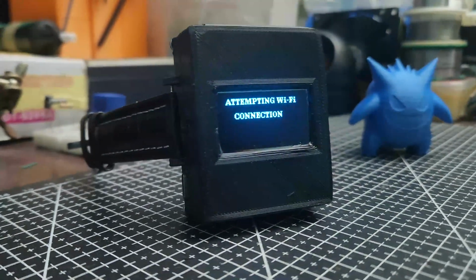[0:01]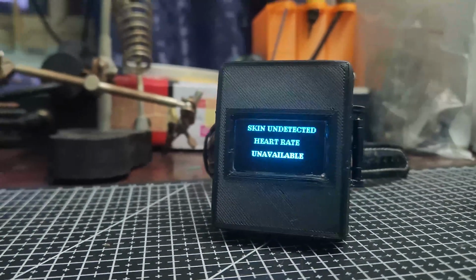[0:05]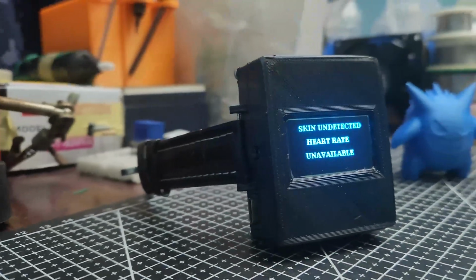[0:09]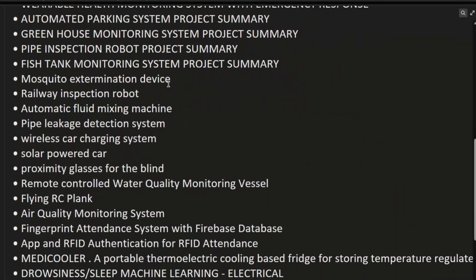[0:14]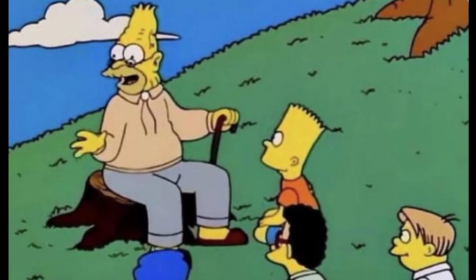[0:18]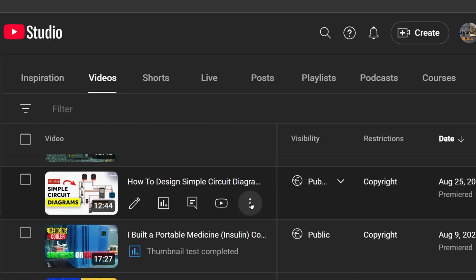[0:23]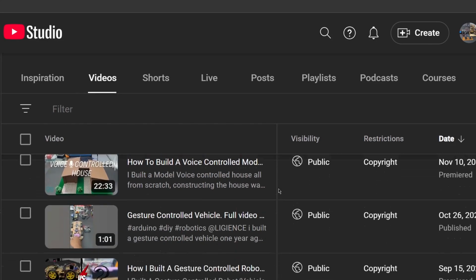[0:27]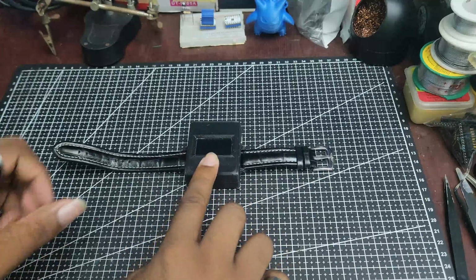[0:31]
Welcome to my new series, One Day Builds, or DIY One Day Builds, where I go over simple projects you can do with a little bit of effort and time. On a regular basis, I build a lot of stuff I normally would overlook making videos about. Why, you may ask? Because I never felt like a video on these simple projects would make good long-form videos or garner any attention. And that's mostly because I thought so, and I wanted to output much higher quality robotics videos too. Don't worry, I'm making a lot of those robot videos and you'll be seeing them real soon.
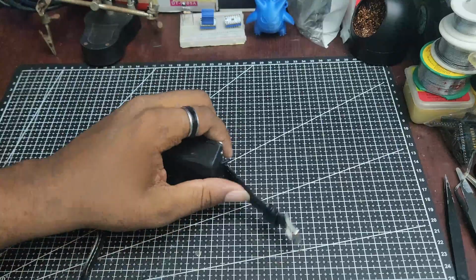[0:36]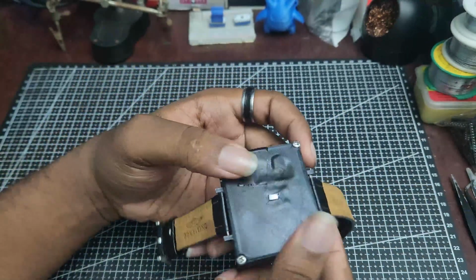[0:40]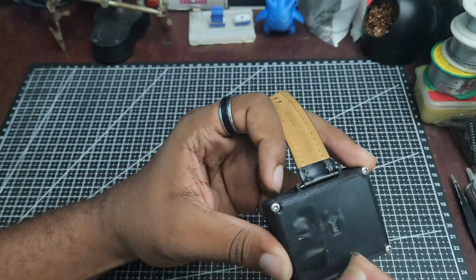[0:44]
But that's a dilemma, because as a 500 subscriber count channel, thank you to all my 554 subscribers as of the recording of this video. All the project costs are fully funded by me, your friendly neighborhood, temporarily broke engineer.
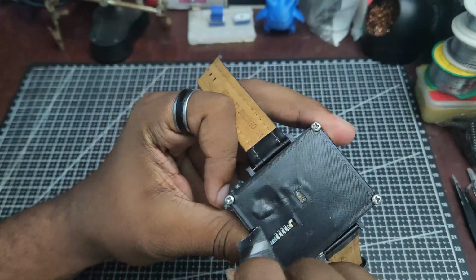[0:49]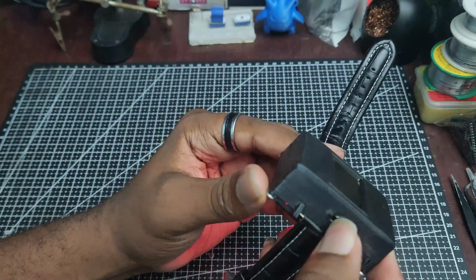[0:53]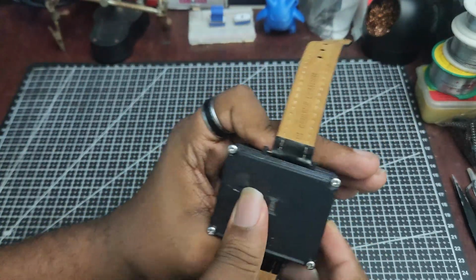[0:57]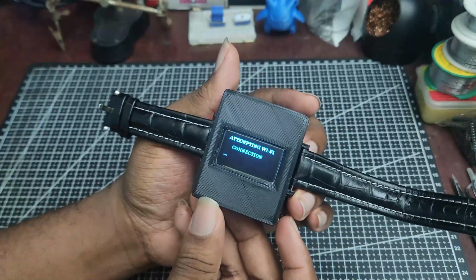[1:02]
All in all, I decided to start this series where I make simple videos on simple projects which can act as a guide for you, the viewer, to achieve, and they most times should be relatively easy projects if they fall under this series. Without further ado, let's get into it.
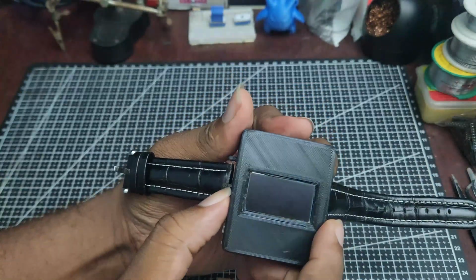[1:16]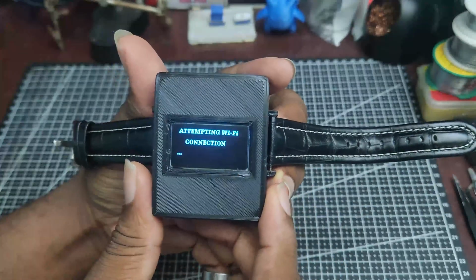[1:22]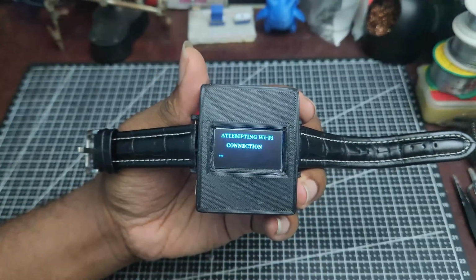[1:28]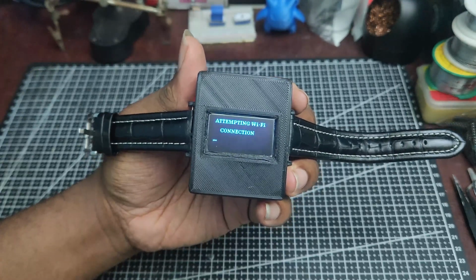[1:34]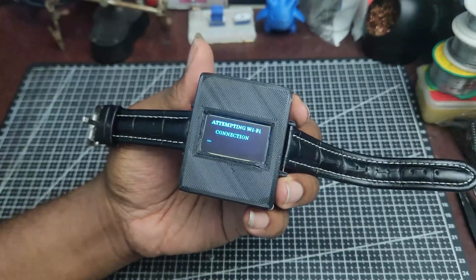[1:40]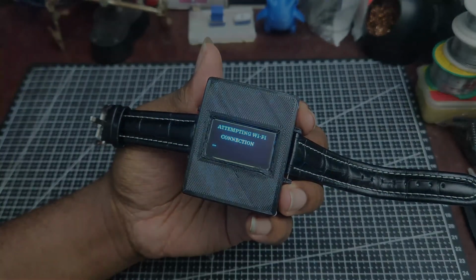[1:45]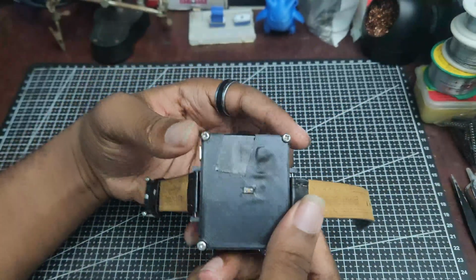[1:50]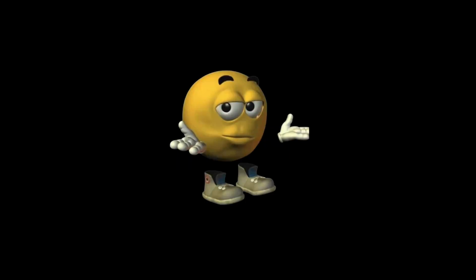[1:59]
Alright, so enough of my yapping. This is a simple heart rate watch, which, like the name implies, it monitors your heart rate. Yeah, that's all it does. I know you probably expected more, but that's it. So, how did I get here?
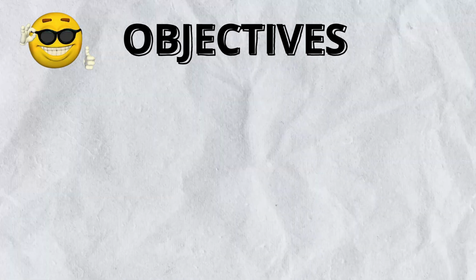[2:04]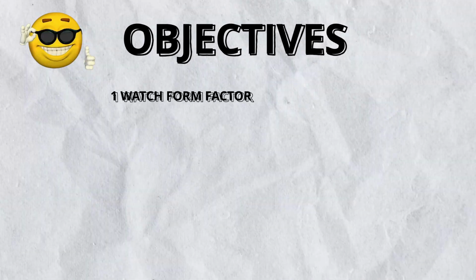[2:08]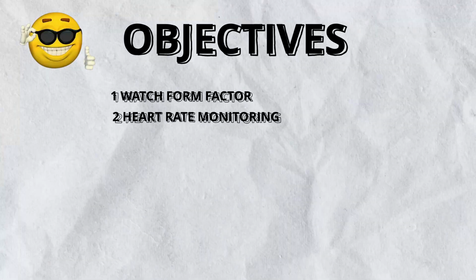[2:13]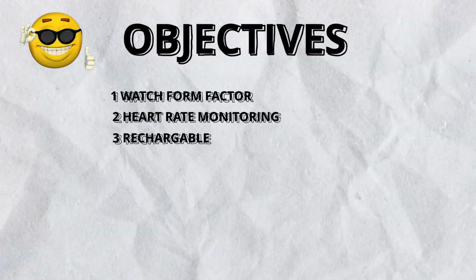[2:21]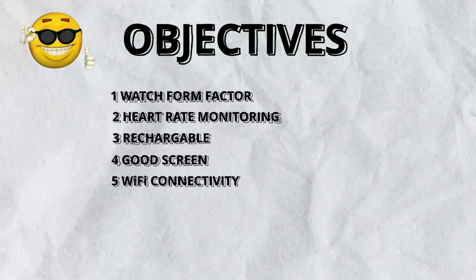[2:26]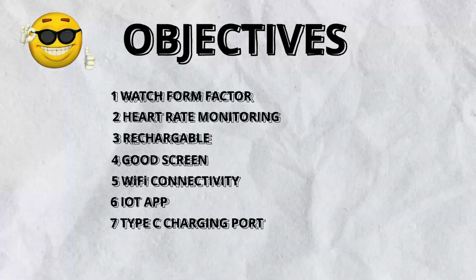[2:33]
First things first, just like any project, I define the objectives. You must be able to do or have the following. One, be in a watch form factor, so more like a watch and less like a bulky pile of wires. Two, it's got to be able to monitor heart rate, as of course it wouldn't be medical grade data or readings, but you know, just an actual data set. Three, it must be rechargeable. Four, it needs to have a nice screen. Five, it needs to have Wi-Fi connectivity capabilities. Six, it needs to be able to connect to an IoT app where one can see the heart rate readings. And seven, it needs a Type-C charging port.
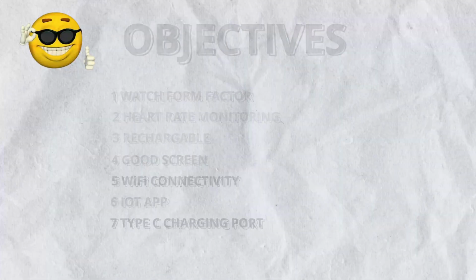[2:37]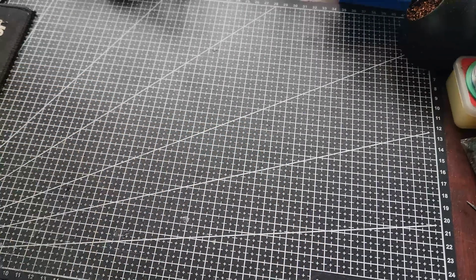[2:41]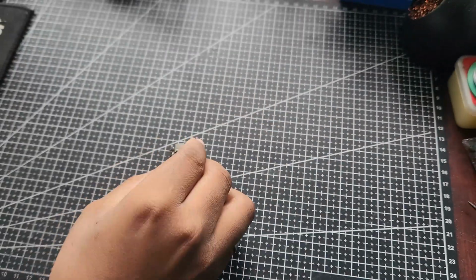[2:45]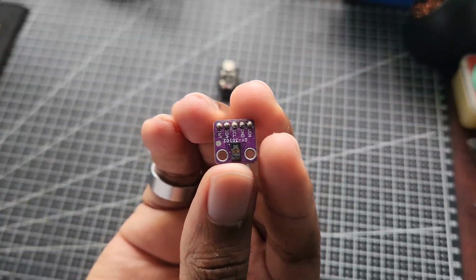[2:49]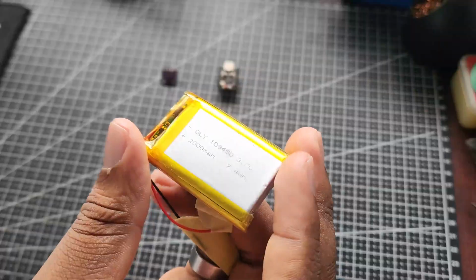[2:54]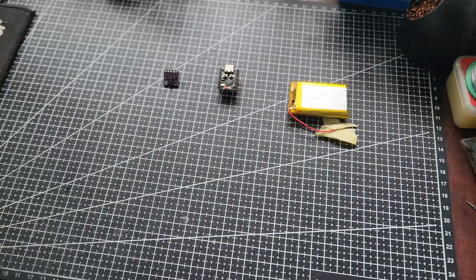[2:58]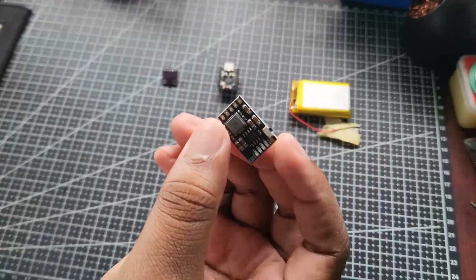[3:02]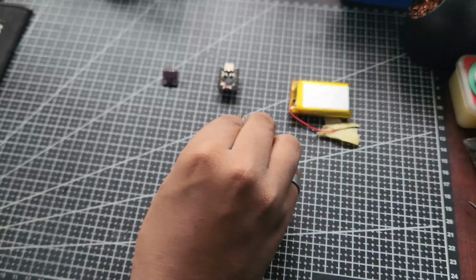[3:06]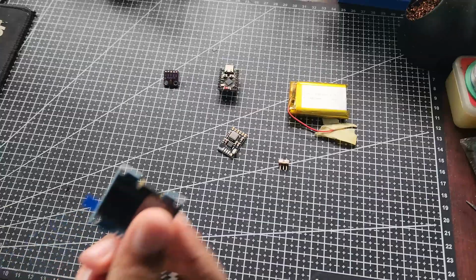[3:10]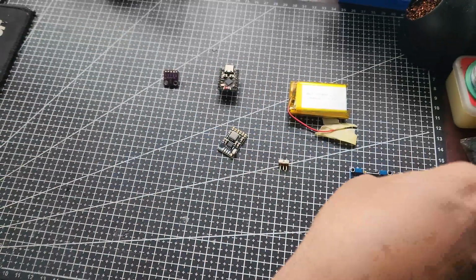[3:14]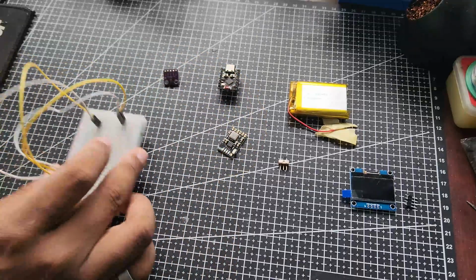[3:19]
So quite simple. With all of these selected, it was pretty easy to settle on the components I needed, which were an ESP32-C3 Super Mini, which, like the name says, it's super compact and useful for projects like this because it has Wi-Fi on board. The MAX30102 heart rate sensor, a small LiPo battery. I would have gotten a smaller one, but none were locally available. A LiPo battery charge and discharge module, which makes it really easy to charge the battery and also have load sharing, so it allows you to use the system and also have the battery being charged at the same time. It also gives 5V output, so that's pretty good. A small switch and a 1.3-inch OLED display. Oh yeah, before I forget, the breadboard with some jump wires just for running tests.
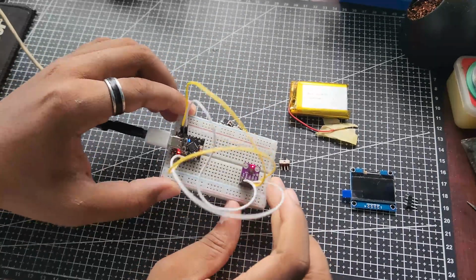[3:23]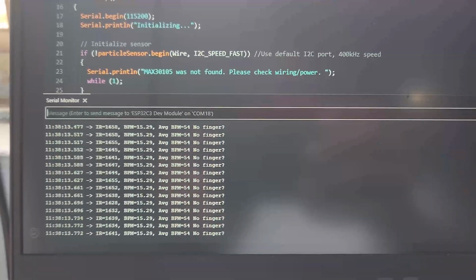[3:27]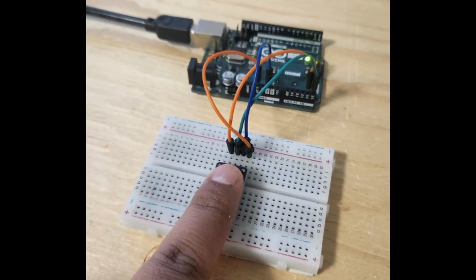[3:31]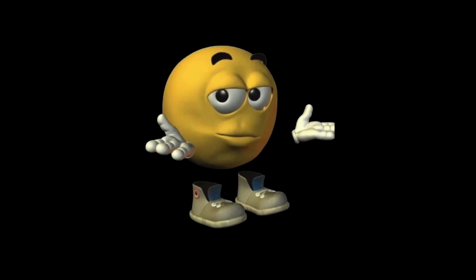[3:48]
First things first, I set out with the sample code and heart rate sensor to confirm I could get the appropriate data and readings when using the sample code. But let me make this clear, the MAX30102 heart rate sensor needs firm pressure on the skin and usually will be placed on the fingertip for minimal skin depth, which allows ease of penetration for good data. But we are going to use it on the wrist, and I know that's not where it's supposed to be used, but hear me out, you know. Simple project, you can ignore the complicated stuff.
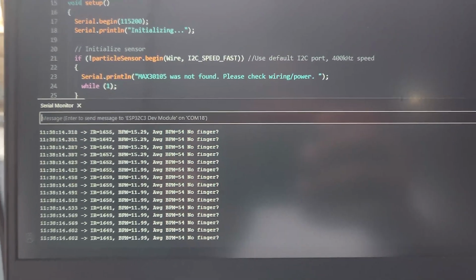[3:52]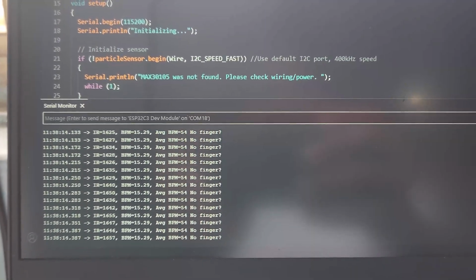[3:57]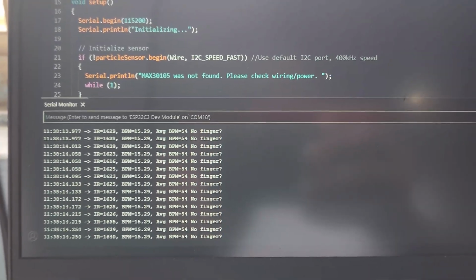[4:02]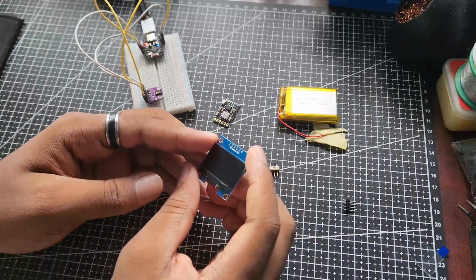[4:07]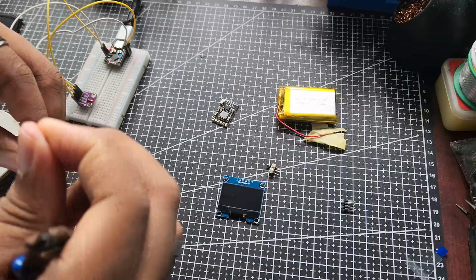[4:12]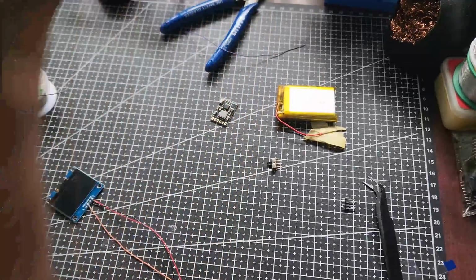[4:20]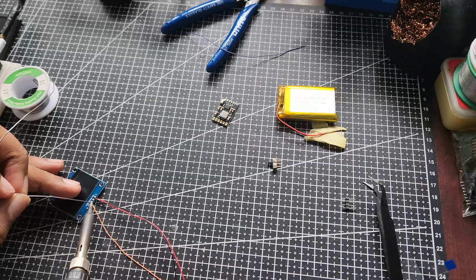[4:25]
The code and module work just fine, as you can see on my screen's monitor, where on the Arduino IDE I have readings from the serial monitor for the average BPM as it's being printed. But here comes the biggest problem of all, compactness. The build needs to be extremely small, so I made sure to solder these small 22 AWG wires to the screen and run the test connections on the breadboard. I do this instead of using headers that would occupy more space, and that's because they will get in the way when I'm trying to squeeze in everything for the final build. I also maintained this method of thinking throughout the project to make sure it was as small as possible.
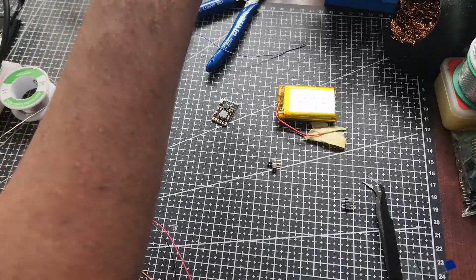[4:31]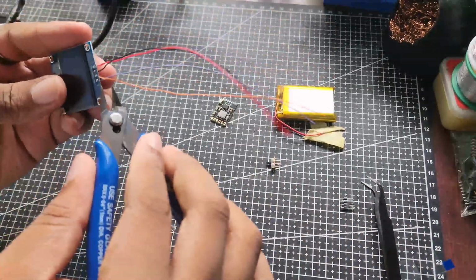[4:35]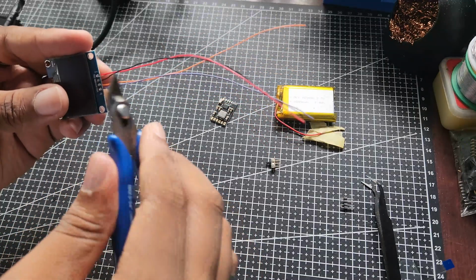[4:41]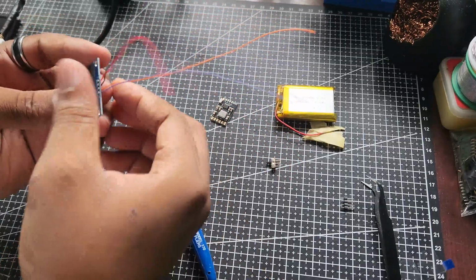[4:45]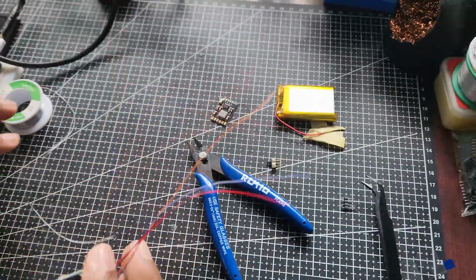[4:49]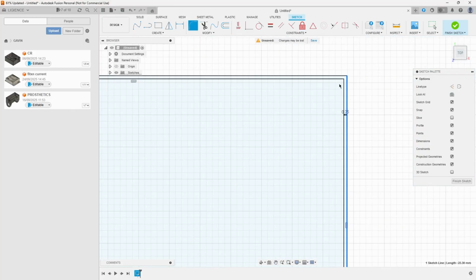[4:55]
After soldering and snipping off some excess wires, the screen was ready. Now here's the thing, instead of spending my time trying to perfect the electronics and making all the connections along with programming everything, I decided to take a different approach and make the watch case first. So I set up Fusion 360 and dived into 3D modeling. My reason for doing this was so that I could print the body of the watch first.
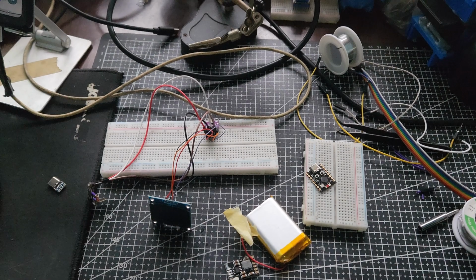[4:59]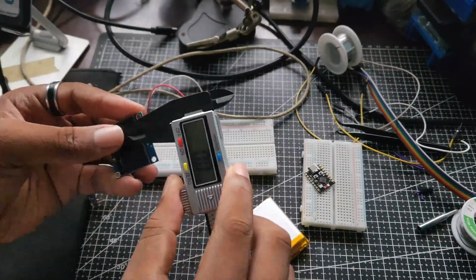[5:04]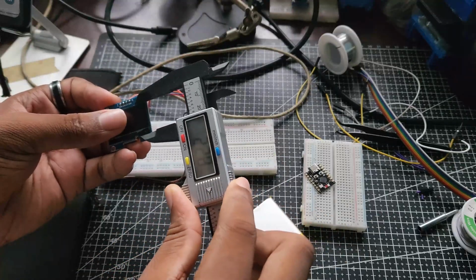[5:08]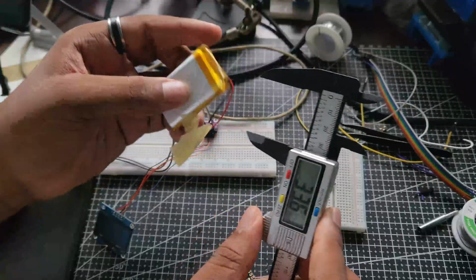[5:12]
The idea is that I measure the parts, estimate how much space they'll occupy based on their positioning and arrangement, and then I optimize said arrangement in the best possible format, after which I make sure that every component can be contained in the smallest amount of space possible.
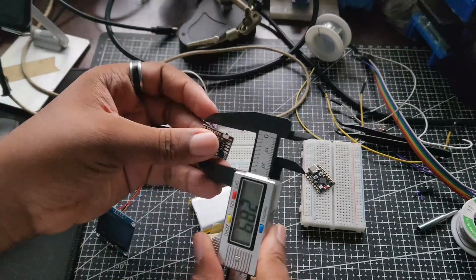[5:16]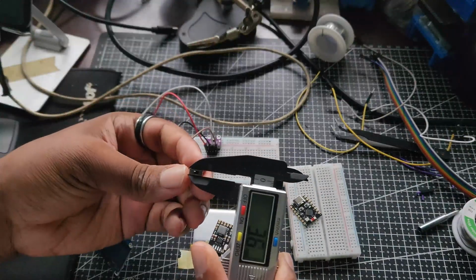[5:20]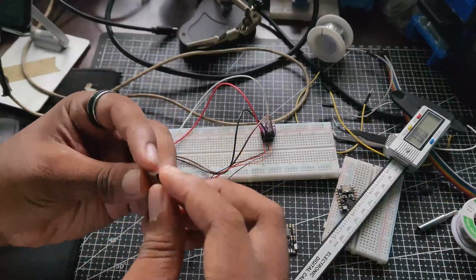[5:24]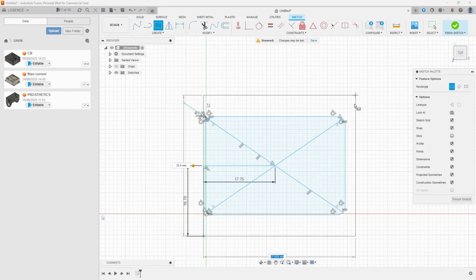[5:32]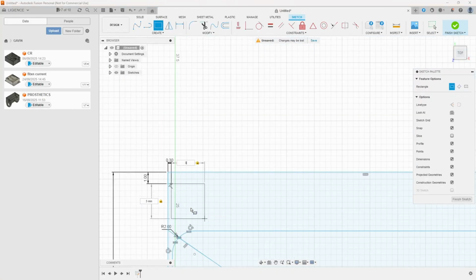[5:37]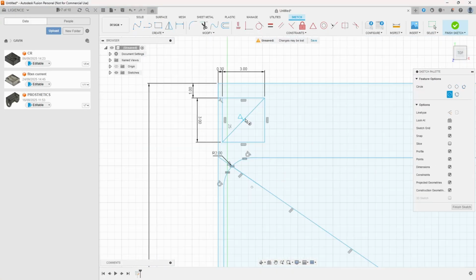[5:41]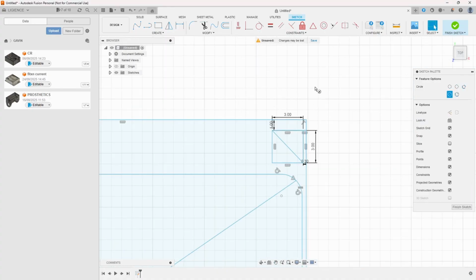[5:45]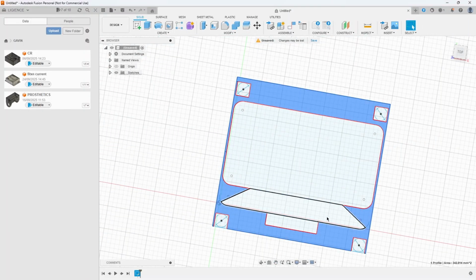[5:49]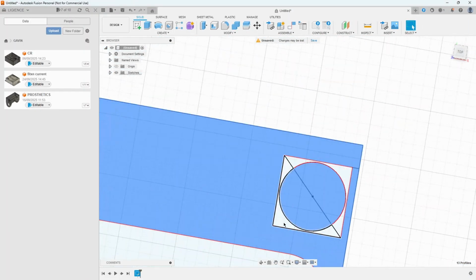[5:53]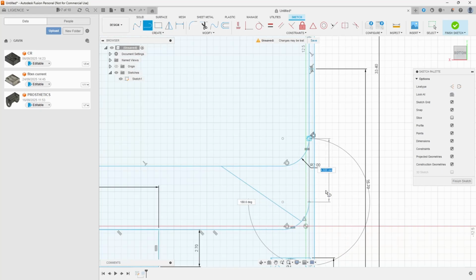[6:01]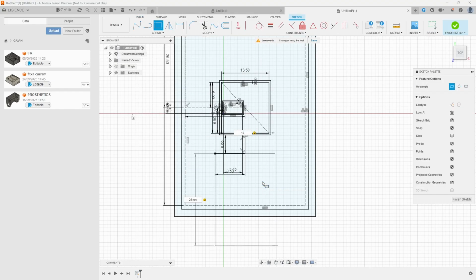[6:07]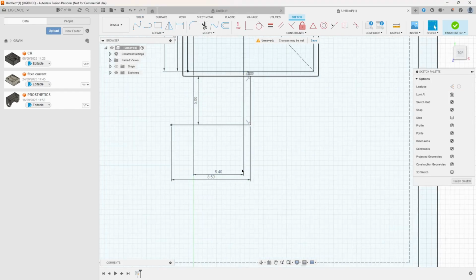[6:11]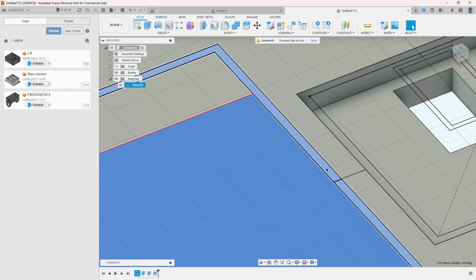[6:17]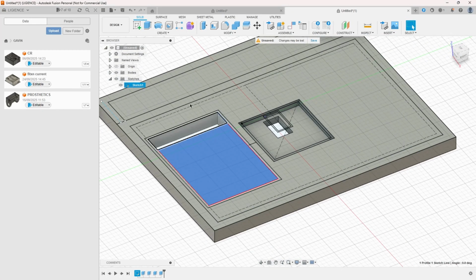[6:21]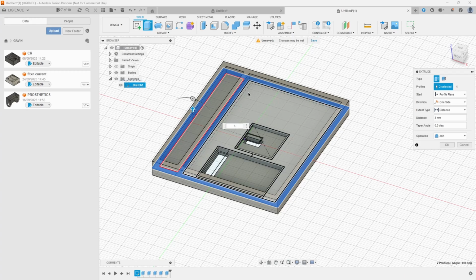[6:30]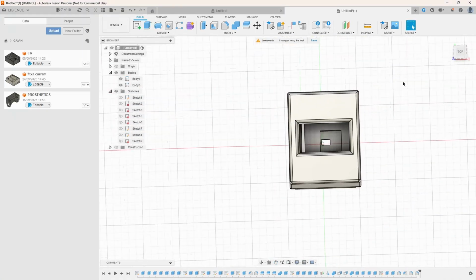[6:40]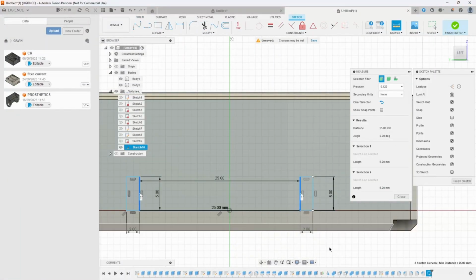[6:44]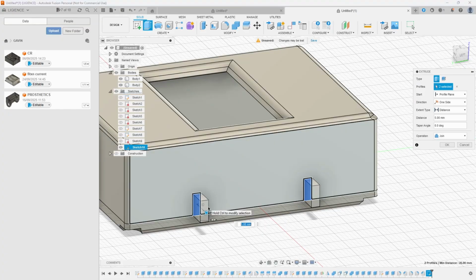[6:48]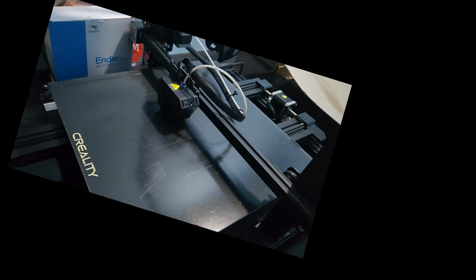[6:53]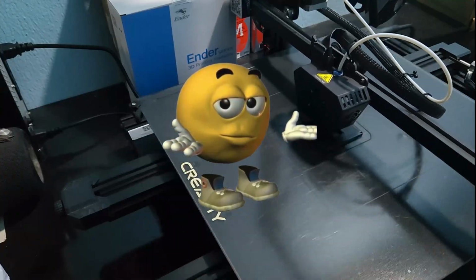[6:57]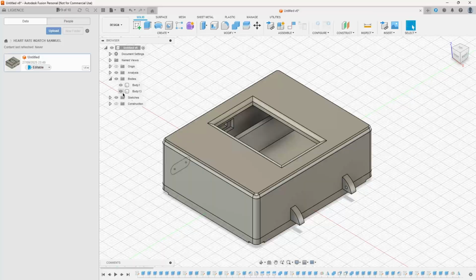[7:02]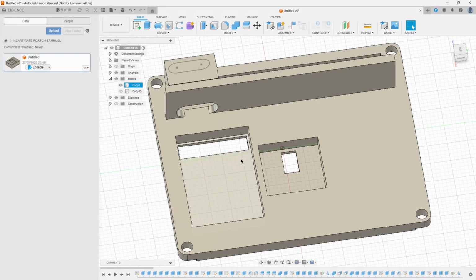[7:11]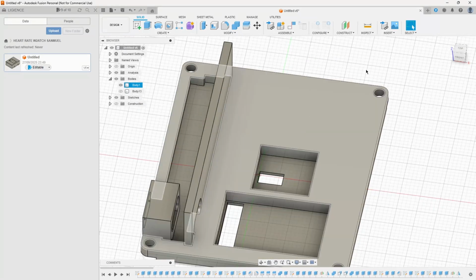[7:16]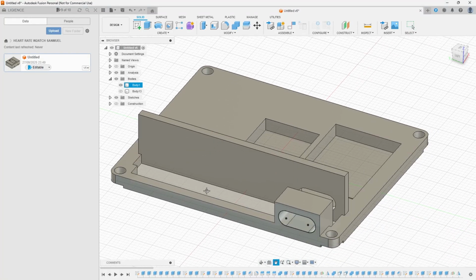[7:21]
Now, this was hellish. I made mistake after mistake, iteration after iteration, 3D print after 3D print after 3D print. Yes, a bunch of it was human error and bad estimation, but hey, I finally arrived at this design, where the heart rate sensor sat at the slots on the bottom of the watch so it could contact the skin through an opening, and right beside it would lie the slot for the battery charge and discharge module. Then the battery would sit on top of everything, while the microcontroller would slide sideways into a nice slot to the left of the battery.
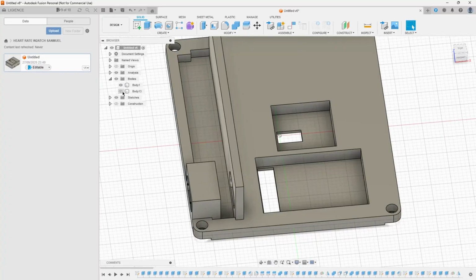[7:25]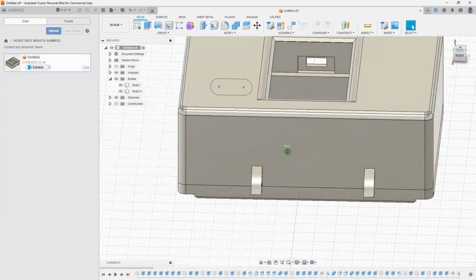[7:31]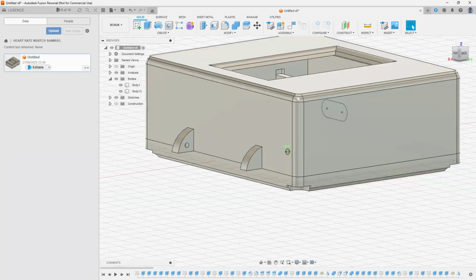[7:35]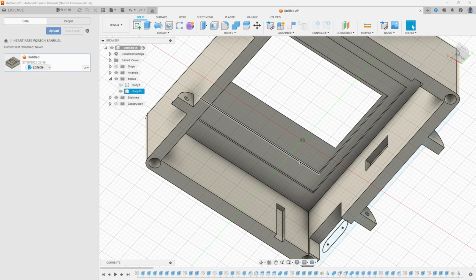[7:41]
On the body of the watch, there are two extruded mounts that allow for the spring-loaded metal rods that help mount the watch strap, so it can actually be worn as a watch. And as for the screen, it would obviously be secured from the inside after being aligned, and by secured I mean hot glued. And finally, to the left of the casing is the charging port and switch, rounding up everything.
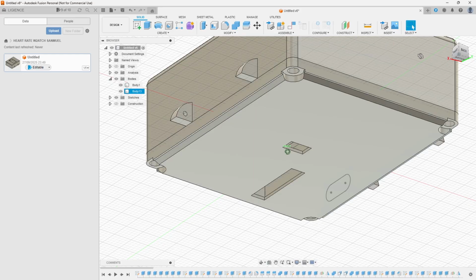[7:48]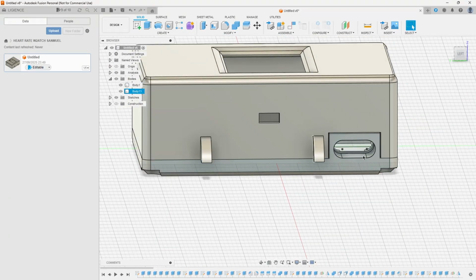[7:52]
With the final iteration of the design and 3D print done, I decided to assemble it. Now, I want to apologize that the footage here isn't so great, thanks to the fact that I didn't think I'd be posting this video, but nonetheless, here it is.
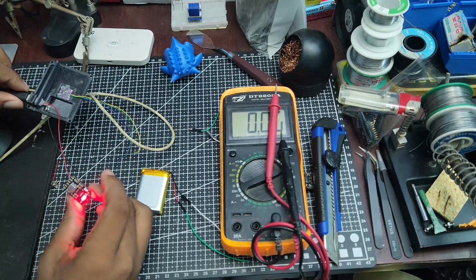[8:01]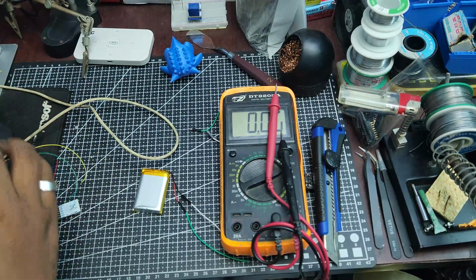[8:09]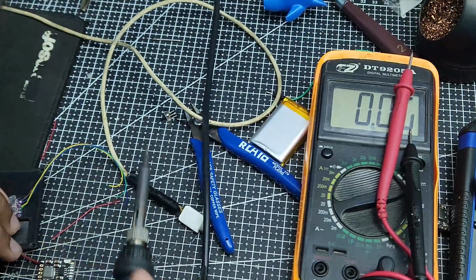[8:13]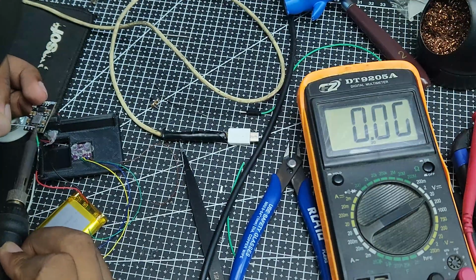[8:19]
I glued the MAX30102 sensor in, then I soldered the wires for the battery charger controller to the battery output, which is controlled by a switch, and to the Type-C port for input. This was quite difficult as I had little to no room to work with and I didn't want excessively long wires. With the heart rate sensor and charge discharge module set in place, I glued them in and glued the battery on top.
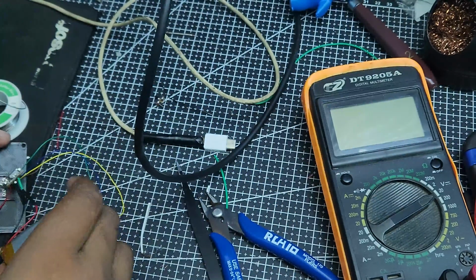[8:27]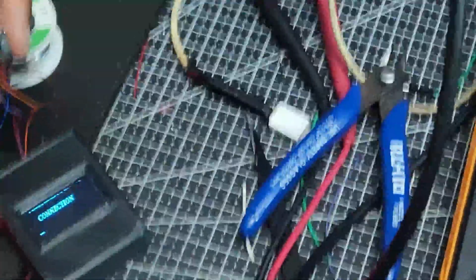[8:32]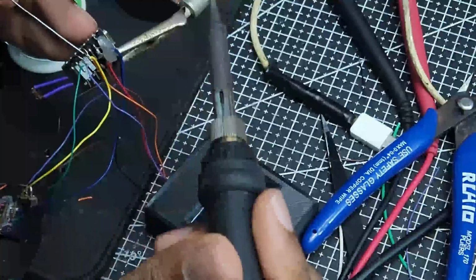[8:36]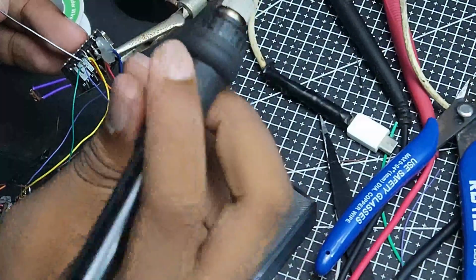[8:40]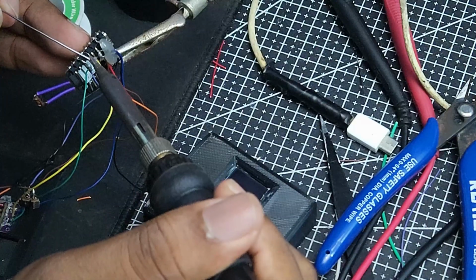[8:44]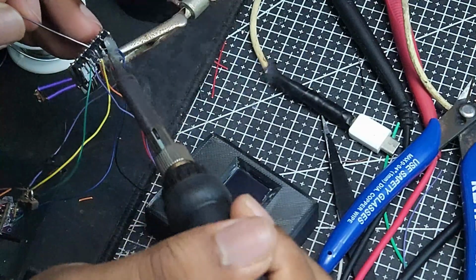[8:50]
Because of the male headers I had soldered earlier on for the ESP32, I had to bend the pins inward so that it would fit into this tiny row available on the left. I forgot to mention it earlier, but in the design, I added M3 screw slots so I could screw everything in and have it as compact as possible. Once I was able to fit everything in and confirm it was working, I proceeded to bury myself in the code.
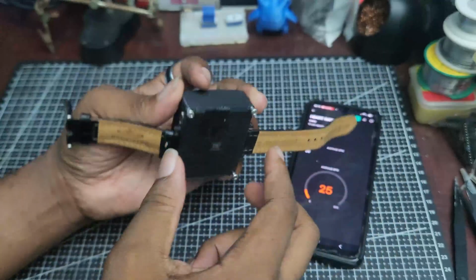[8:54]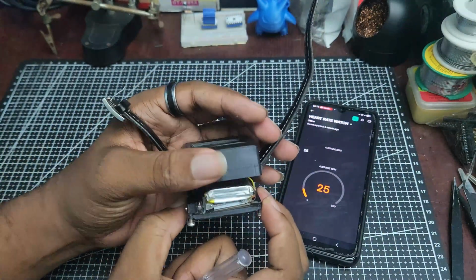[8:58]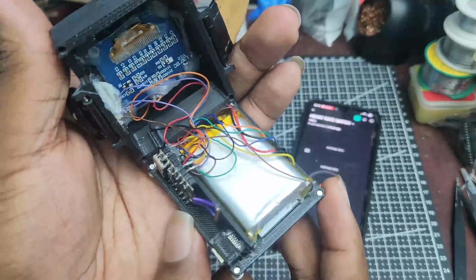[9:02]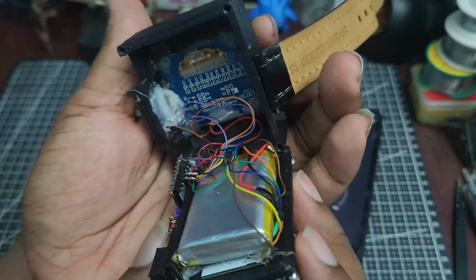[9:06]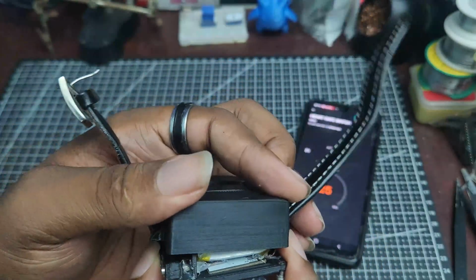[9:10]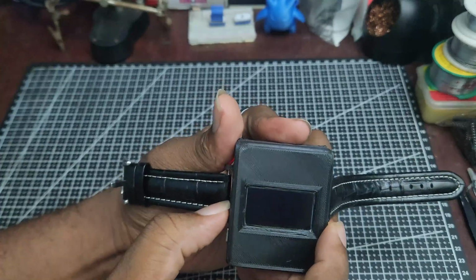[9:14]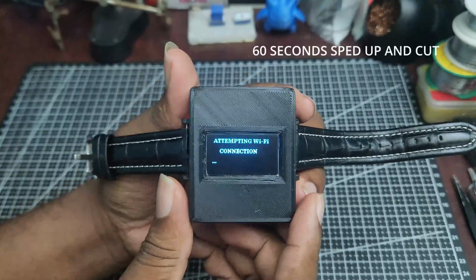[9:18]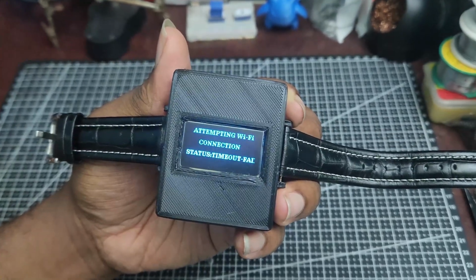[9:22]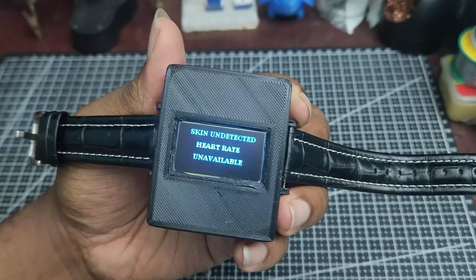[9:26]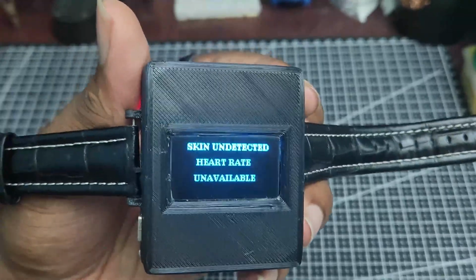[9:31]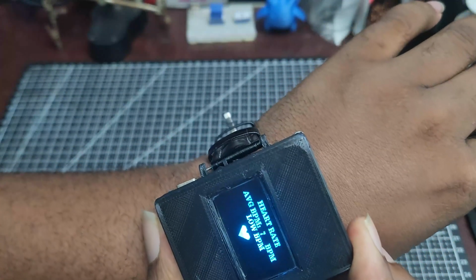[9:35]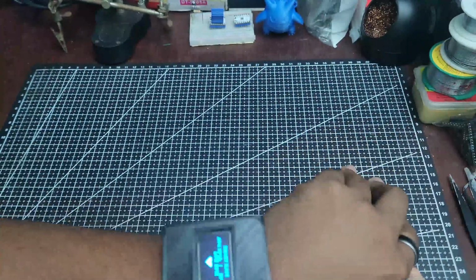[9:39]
This is how I programmed the device to function. It boots up and displays the logo, then attempts to connect to Wi-Fi. If it doesn't connect in 60 seconds, it goes to offline mode, where it just measures the heart rate and displays it on the screen. Of course, this is also based on if it's in contact with any skin or not. So no skin, no reading; skin, reading. Heart rates above 100 are signaled as high and heart rates below 50 are signaled as low. It's in beats per minute, that's the reading unit I chose.
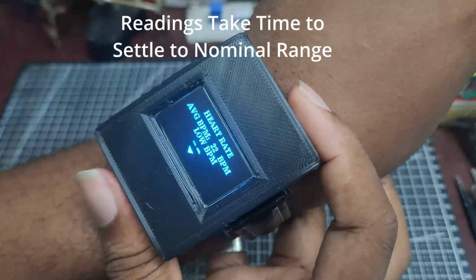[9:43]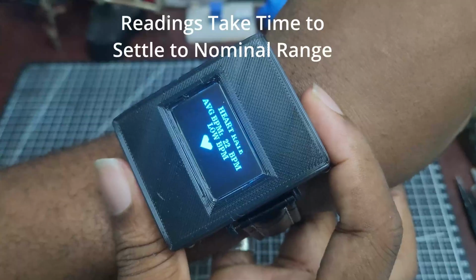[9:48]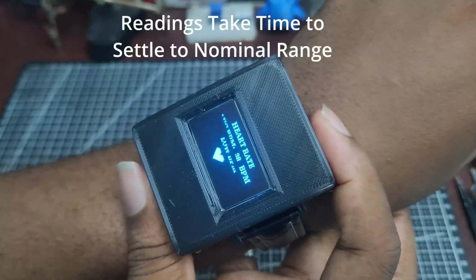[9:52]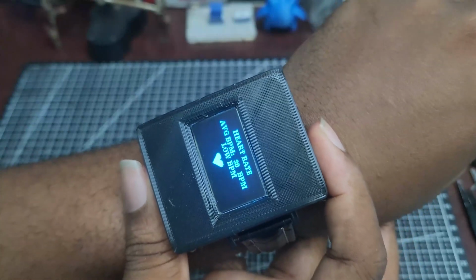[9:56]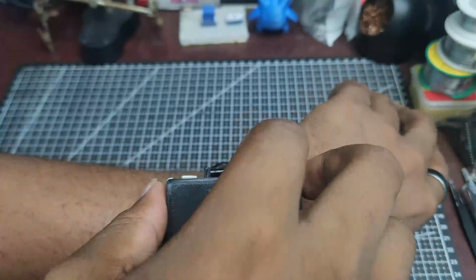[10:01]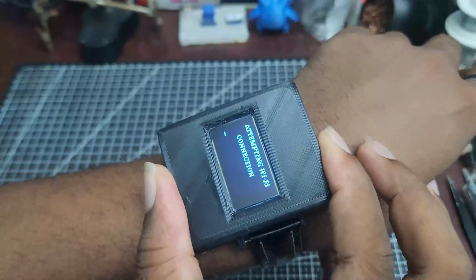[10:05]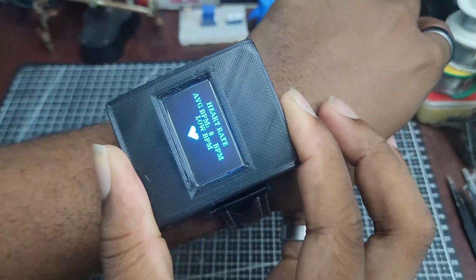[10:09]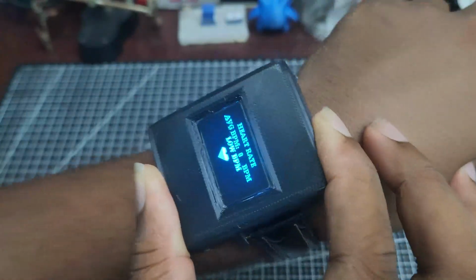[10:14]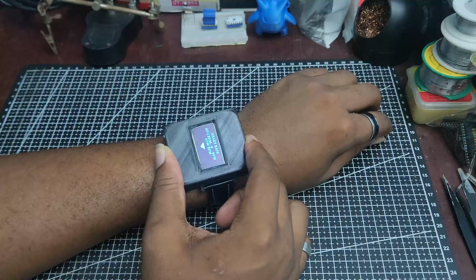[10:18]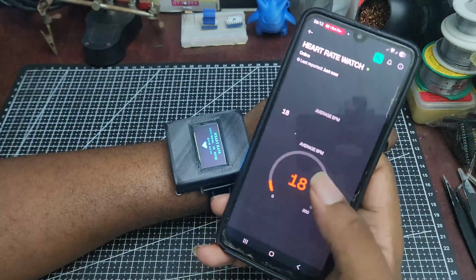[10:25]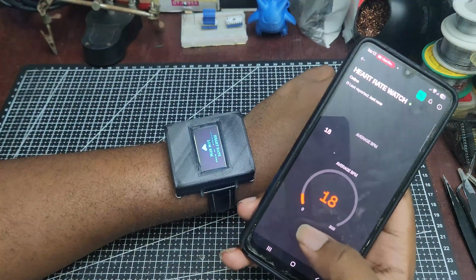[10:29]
But it also has an online mode, which it goes into if it connects to Wi-Fi on startup. Then, while it measures the heart rate, it sends the data every 1 second to the app. It's also set up to check for loss of connection, and if that happens, it goes into a subroutine to constantly check and try to reconnect, ensuring that data is constantly sent to the mobile app. And as for the mobile app, it's the third-party app Blynk, which allows me to make a very simple user interface for the project. With that, here's the final product.